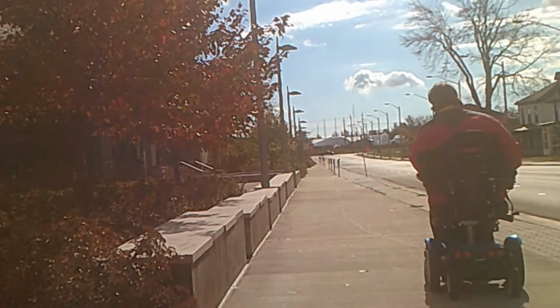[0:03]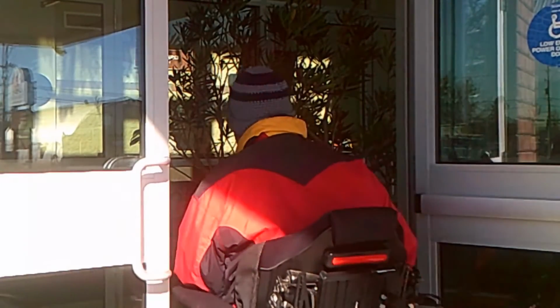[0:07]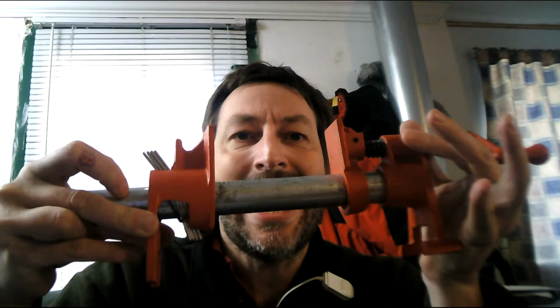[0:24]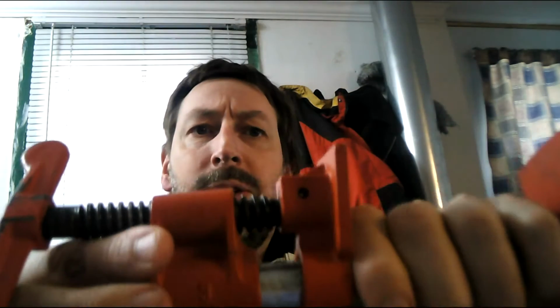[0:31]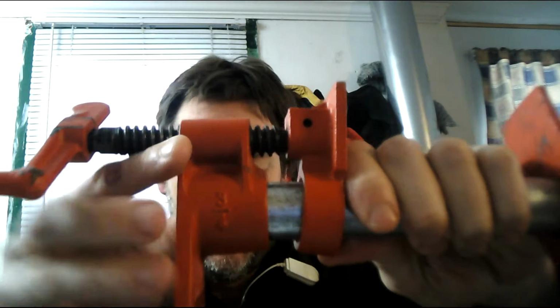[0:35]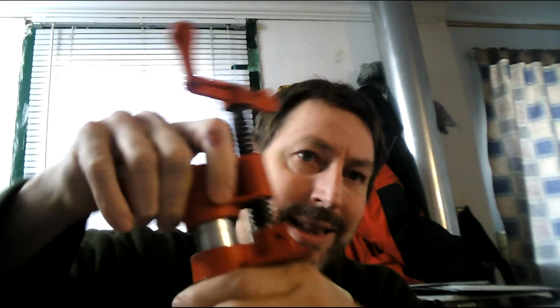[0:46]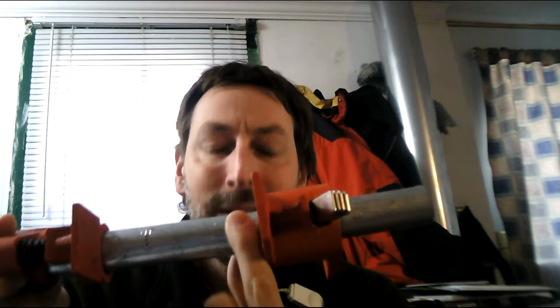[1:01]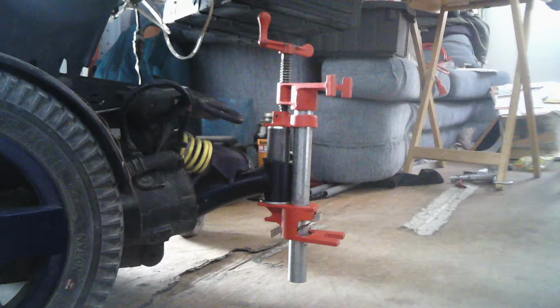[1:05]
This other end here just moves back and forth depending on where these three little tabs are set. And you can see they've had a lot of pressure on it a few times with the marks that bit into the pipe. Take a look at this photograph. It's how I set it up on my wheelchair.
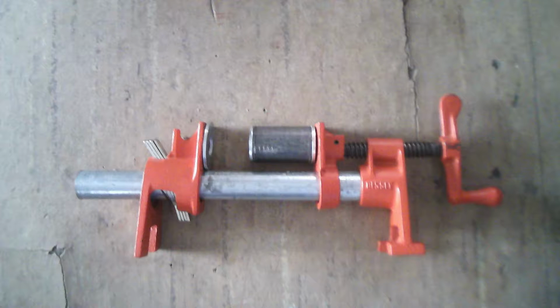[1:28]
The bearing is already inside of the wheelchair stem, and it has the tension ring for this particular model in there already, so the bearing is lined up ready to go. Now I want you to take a look at this second photograph. This is how it's set up without having the wheelchair impede the view.
So the two extra parts you're looking at are a scrap length of the pipe. So the circumference, or else the diameter of it, matches the bearing that's specific for my wheelchair. And then I just matched up the washers with the pipe right here. For the washer at the bottom, I measured what the wheelchair size was and then found a washer that was about 1/4 inch larger in diameter.
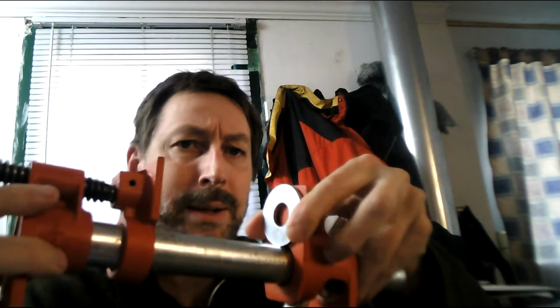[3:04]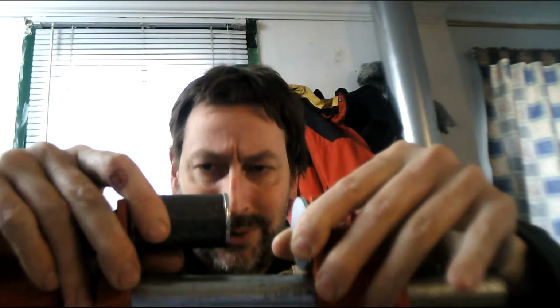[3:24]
There is one more part that you could use to do this that would make it even easier. That would be to buy a bolt that is about 4 inches long and then use your pipe cutter to cut off the threads and the cap at the other end so you're only left with a barrel for all intents and purposes. And then if you took that bolt and epoxied it here on the end and then drilled these two holes to be the same size. So my bearing is 5/8 inch, so I would need to make this a 5/8 inch hole, and this one as well. And then you epoxied it onto the clamp here. It would mean that it would line up the bearing, and the bearing would go in straight each and every time.
When I did the video here, I had put it in on just a very slight incline, like a little sliver was still showing there. So I just needed to tap the hammer about 3 times to finish pushing it into place and close that little bit of a gap.
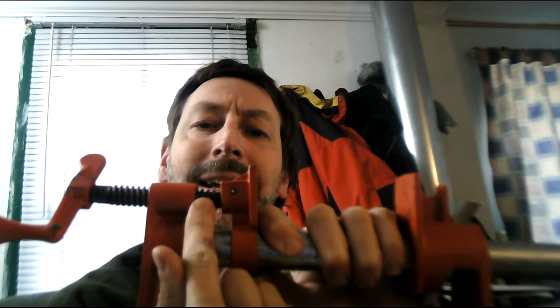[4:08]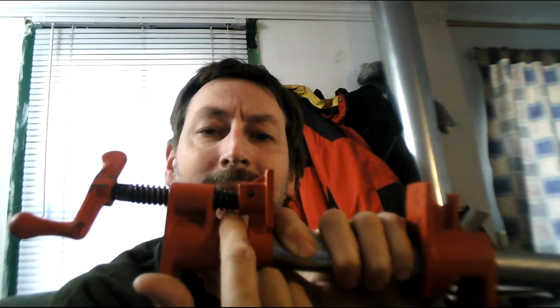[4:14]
The other thing I want you to draw attention to is the little bit of thread here. Bearings aren't that tall, so you count 1, 2, 3, 4 threads. That means that turning the handle 4 times, 1, 2, 3, 4, is all you need to do in order to seat the bearing. How you're going to know it's reached its home is this won't turn anymore. It'll get really hard to turn, and you've reached the maximum point that you can do it.
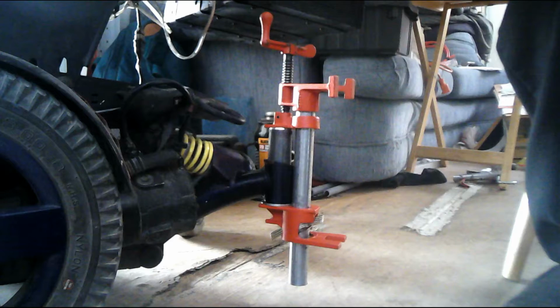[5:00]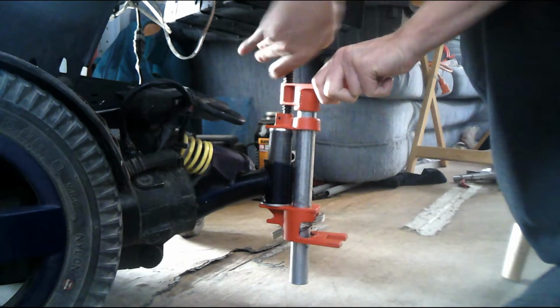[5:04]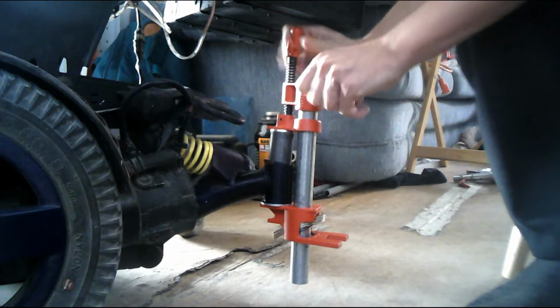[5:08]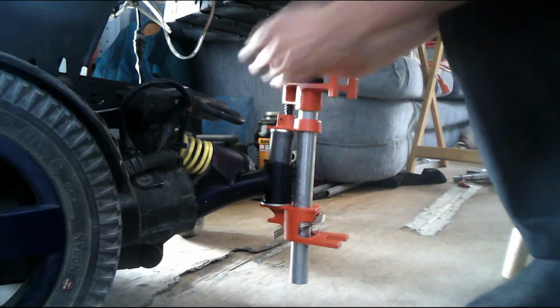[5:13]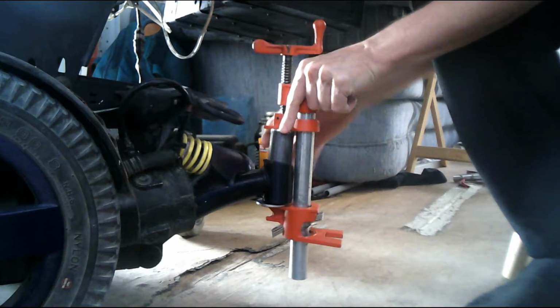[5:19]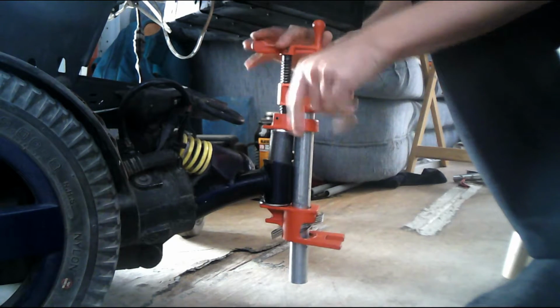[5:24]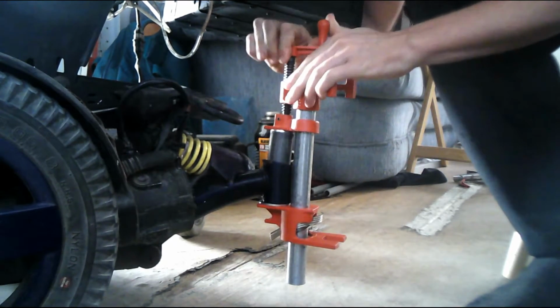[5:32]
Now that I've given you all the background information, I want to offer you the video of me actually doing this to my wheelchair. So here we start at the point where the H-clamp is on my wheelchair already. You can see as I begin to turn it, I slipped it a little bit, and that's why I talked about adding a bolt to make this line up. It would keep it straight and on track to avoid this type of thing from happening. I'm not saying it's necessary, because you'll see here that with a few more turns I've had success, and the bearing is now press fit into place.
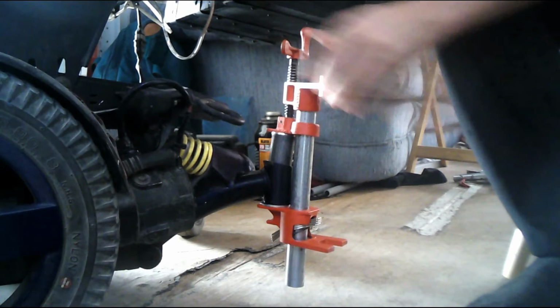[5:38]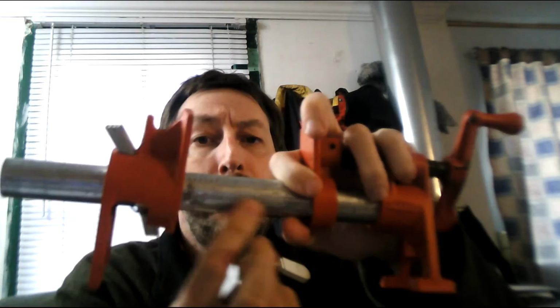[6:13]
So there's the option of the hydraulic press. I made a video about how I built my hydraulic press a few months back, and I'll put the link for it in the description. This is certainly an alternative that's much less expensive. The H-clamp, that is the red ends, this and the end here, was around $25. This piece of 3/4 black pipe here, that was about $5. And then this length right here,
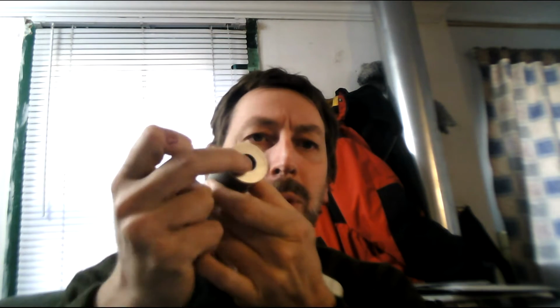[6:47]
someone had asked Home Depot to cut the pipe for them. That length was actually scrap, and the store staff just cut it for me to the size they thought would work. In fact, they made two cuts. This was the one that worked. Washers aren't expensive. You're looking at about $0.25 for this one, and this guy right here.
So for me, I would take this with me if I was to go on vacation with my power wheelchair so I could press fit a bearing if it happened to wear out. It's going to be a lot easier to bring this than the bearing press that I've made. I also want to point out to you that if you showed somebody this video or have articulate skills, this is something that you could do yourself without having to hire out the maintenance.
Why I say this, or how I reach the conclusion, is that once you know what bearing part your wheelchair uses, you can literally go online and mail order them yourself. They're not, at least in my situation with the wheelchair, proprietary to the wheelchair manufacturer. So it was a matter of getting the 6-digit code. Here's an example on the screen right now. And then I did a search online. I've found that there's bulk discounts available, meaning if you order 10 or more, the shipping charge, especially if it's leaving the United States and coming to Canada where I live, becomes reasonable.
Or if you're someone that's able to plan ahead, the option exists sometimes to buy the bearing from Hong Kong or China. And when you look at the cost per unit, that is the cost of the bearings plus the cost of shipping, and then divide that by the number of bearings, it may be cheaper to bring it in from Hong Kong if you're planning ahead. And that's the key on this. There's also stores where I live that sell bearings, and it's no big deal getting your hands on them, but the best price I've found is either buying in bulk or else mail ordering from China, and I've done both.
Finally, the other issue in changing the bearing is removing it from the wheelchair. I've made a separate video to show how I did this. So if this is a job you're taking on yourself, you're assuming responsibility for the whole thing. So you need to have confidence that you're going to be able to do this yourself. So I want to encourage you to watch this other video that will also be in the description to get the details of how I made my bearing puller.